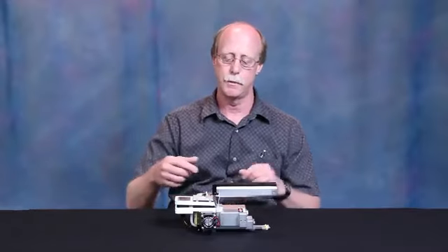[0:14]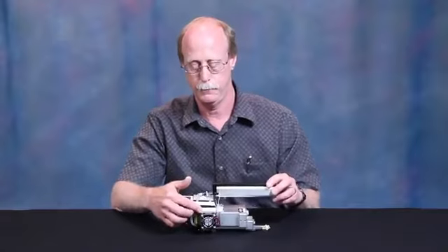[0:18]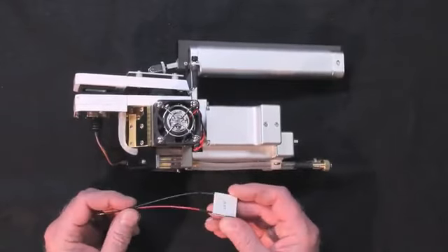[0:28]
Hello, I'm Michael Smith, LI-6400 technician here at LI-COR, and I'm going to demonstrate changing the Peltier cooler element on the LI-6400 head. If you're watching this video, you need to replace your Peltier cooler on your 6400 head.
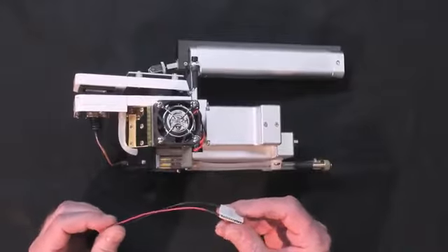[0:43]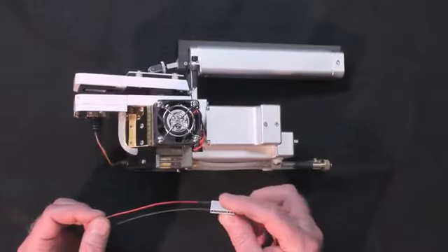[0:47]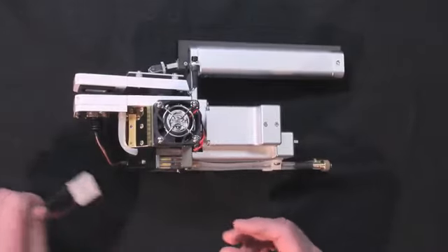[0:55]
The symptoms that you might have might be that your cooler does not work at all, or it might not be able to control the temperature far enough away from ambient for you. So it could be that this cooler is resistive more than it should be, or open circuit. And we'll go through a test to see what is wrong with it before we change it.
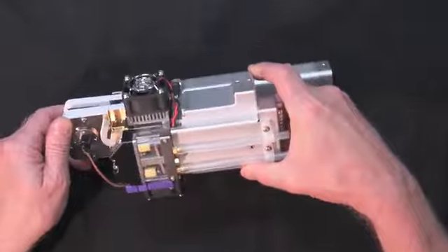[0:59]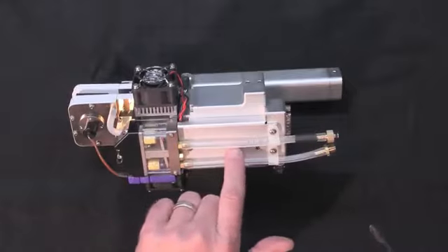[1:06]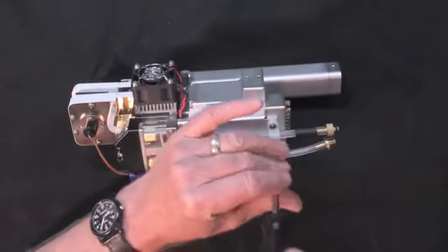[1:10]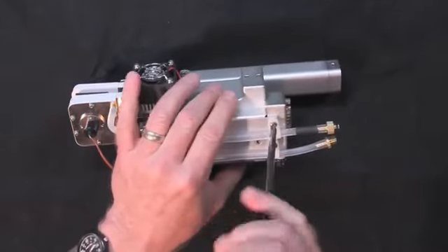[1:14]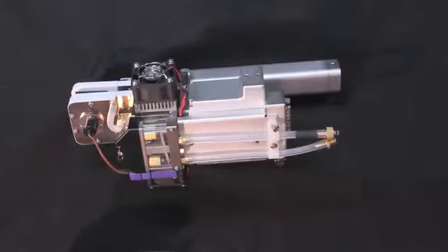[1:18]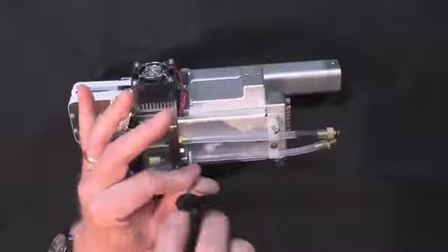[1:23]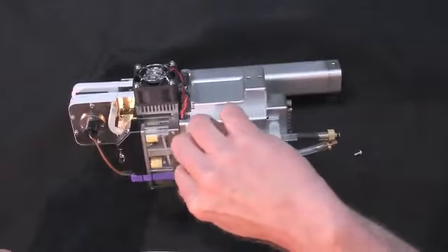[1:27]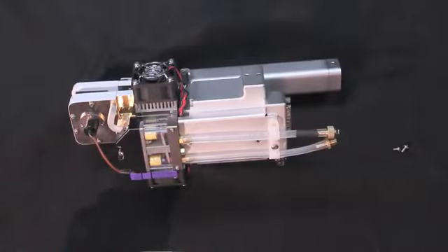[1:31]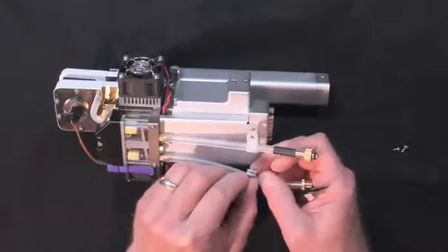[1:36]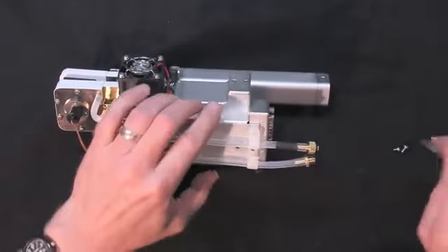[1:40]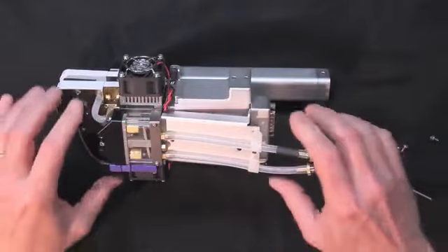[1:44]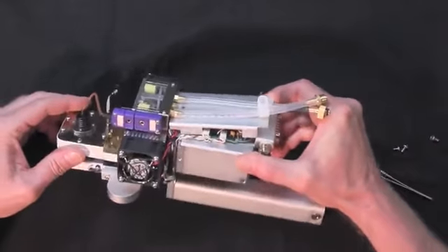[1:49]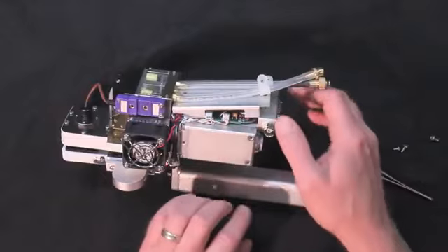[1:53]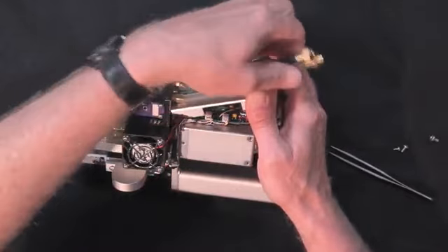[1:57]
First thing you need to do is remove the bottom cover that has the serial number, normally, right here on it, to get to the connections for the cooler. It's pretty common for this to be tight, and you'll sometimes need to pry it off, this cover. I generally get under it with something. And you want to pull the cover up past this connector for the log button so that you don't bend that. The hose is out of the way and it should come off easily.
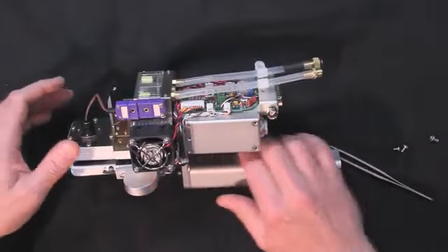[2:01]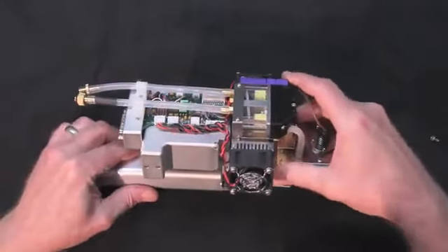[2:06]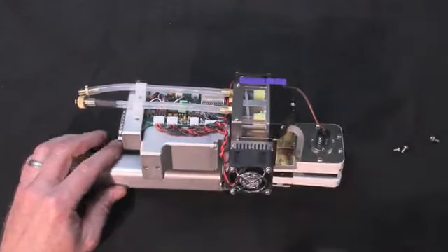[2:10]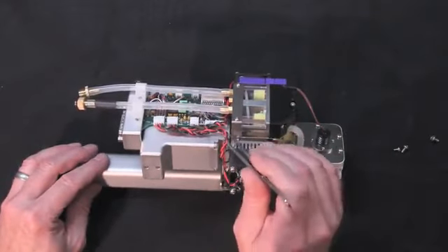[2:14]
Now the cooler wires go to these two white connectors, and you can just follow the wires, like from the left side, from this one, you can see it's this connector. The first two pins are this fan, the next two pins are the cooler.
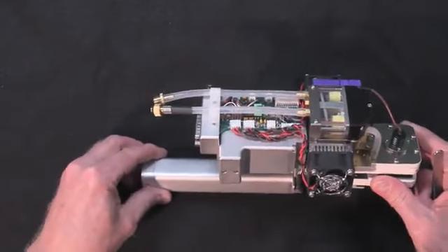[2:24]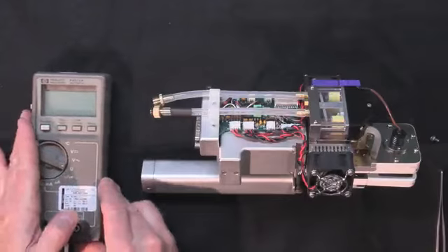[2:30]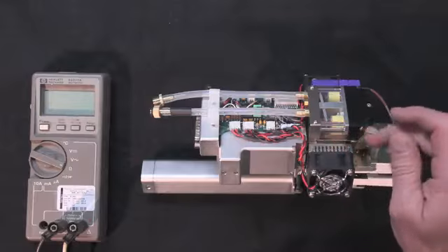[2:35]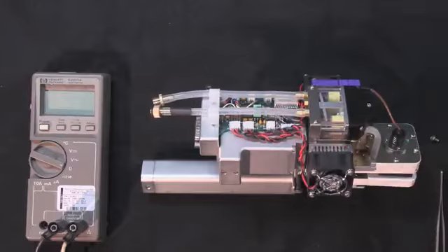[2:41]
Now if you have this 6400 head sitting turned off for about an hour, the temperature on both sides of this heat sink, one side is the block of the cell block and the other side is the heat sink on this cooler. You want to have that at both sides the same temperature, so leave it turned off for an hour.
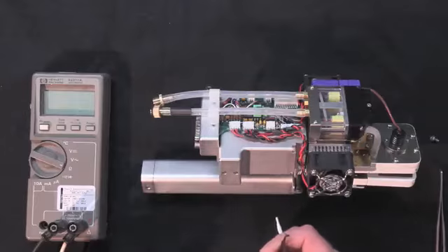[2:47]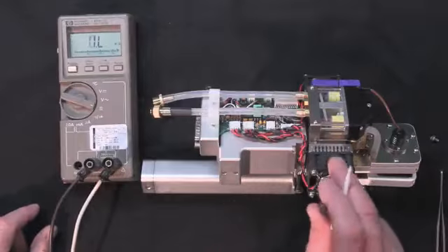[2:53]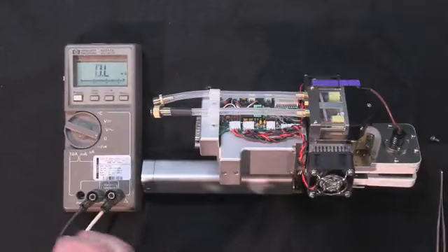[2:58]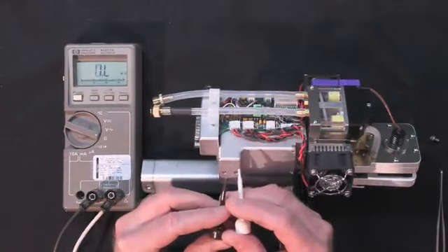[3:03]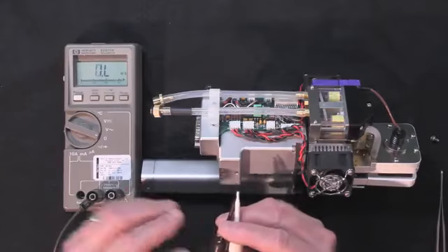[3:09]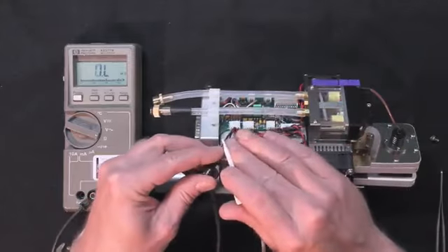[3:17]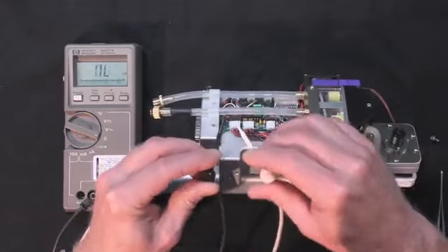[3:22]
Now we're just going to measure the resistance of one of the cooler elements here, and I'm hoping that that display is visible on the video for you. But when you go to make this resistance measurement, you want to touch your leads on there and take the reading immediately, because the current from the ohm meter is going to cause one side to get cooler or warmer than the other. .7 ohms. Okay, that's a normal cooler.
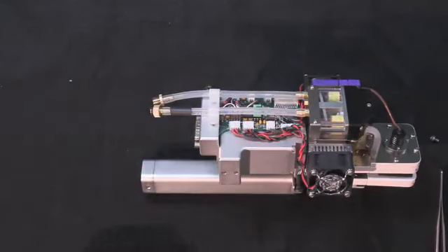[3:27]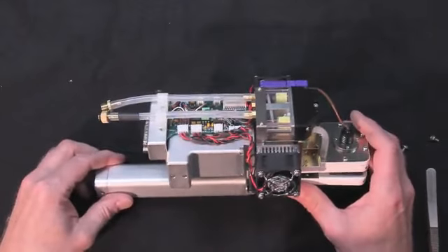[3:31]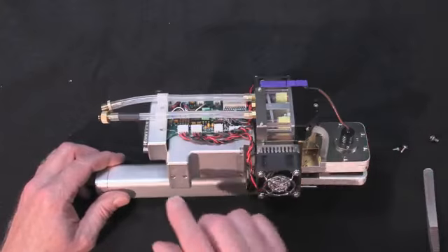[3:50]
We're going to change this cooler even though it's not bad. If it were open circuit, the cooler will not work at all. If it's somewhere around 5 to 6 ohms, you might see half of the efficiency out of the cooler that you need. Over 10 or 12 ohms, and the cooler is not going to work very well at all.
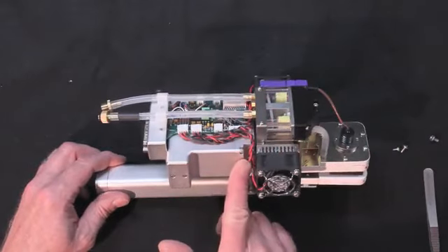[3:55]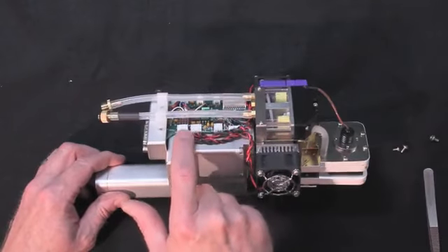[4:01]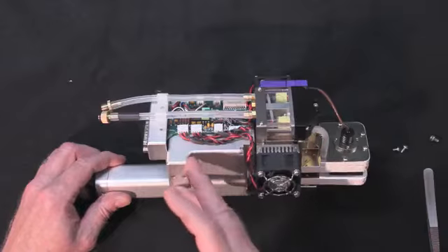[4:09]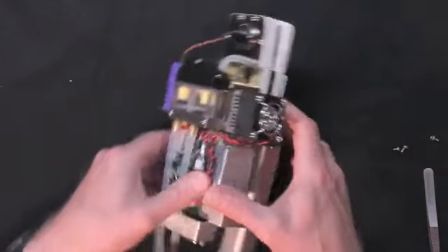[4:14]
We're going to change the cooler and splice the wires right here, because the wires from the cooler are not long enough to make it to this connector, and there are also crimped on pins on the wire ends that you're not able to replace. So we're going to make a splice right here.
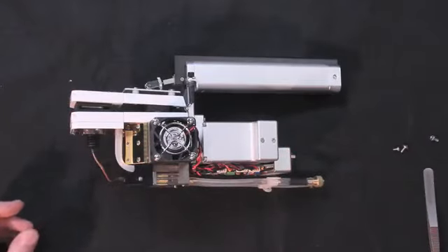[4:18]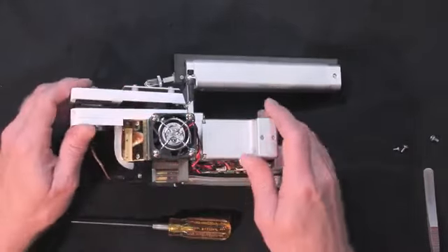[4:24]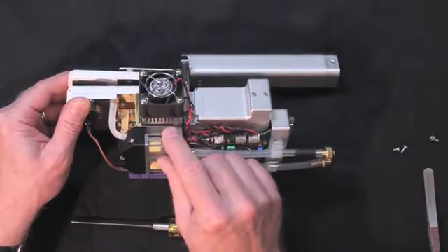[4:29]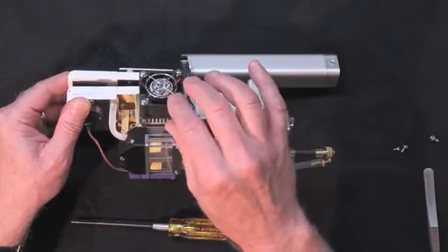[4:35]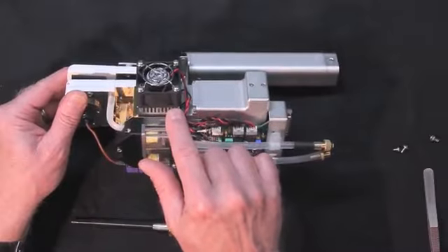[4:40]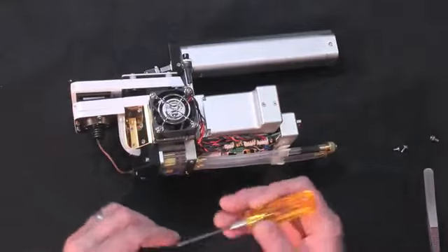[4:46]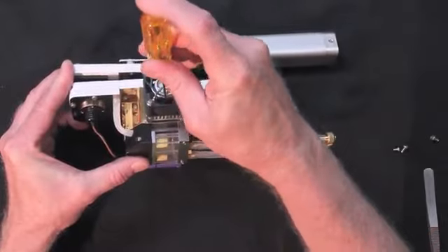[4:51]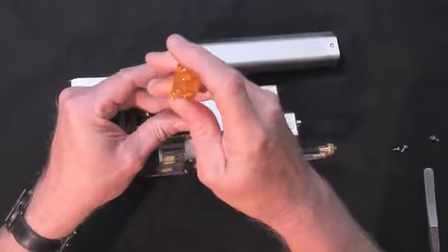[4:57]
The fan is attached to the heat sink. This is the heat sink with the fins. And then the heat sink is then attached with 2 screws to the block of the cell. It's a lot easier to leave the fan attached to the heat sink than it is to remove these screws, and on older units you will have washers between the fan and the heat sink. It's a lot harder to put back together. So I'm going to sneak my Allen wrench through the fan and loosen these 2 screws on the heat sink and leave them in place.
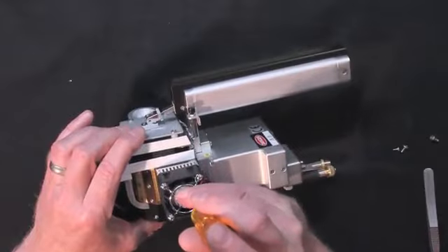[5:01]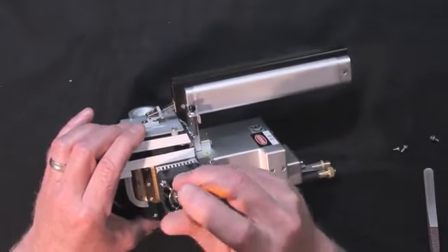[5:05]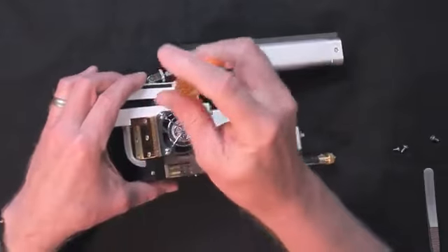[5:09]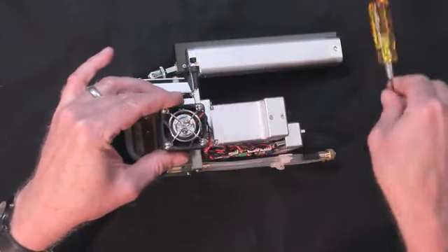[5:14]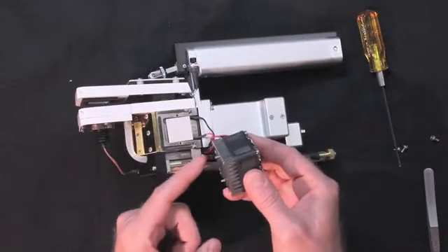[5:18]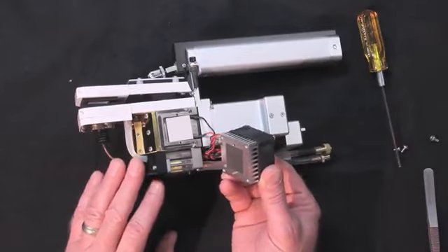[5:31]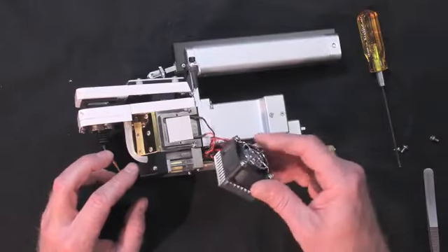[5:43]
Okay, as long as I leave these two screws here facing down, they're not going to fall out, and this will make it much easier for you. There's a thermal conductive pad on the heatsink, this black part. In your kit for the Peltier cooler, you will get 2 of these pads with each cooler. You don't need to replace them unless they're damaged.
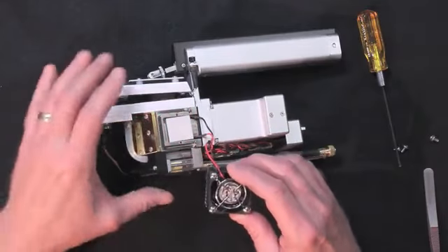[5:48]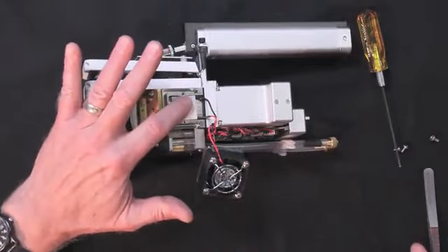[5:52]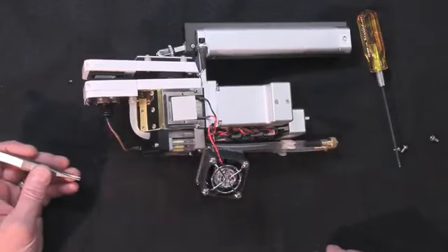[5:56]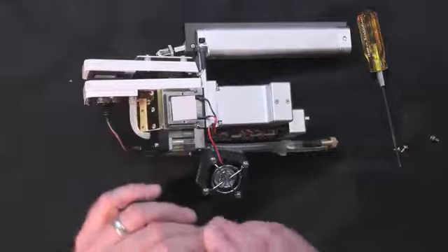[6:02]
Now the cooler has a pad on the other side here, and to get the cooler out you need to pry it a little bit. They stick to the rubber. Sometimes you break the cooler taking it out.
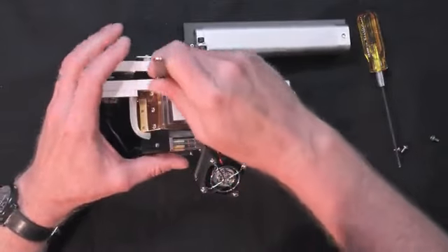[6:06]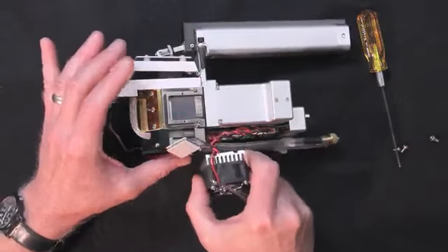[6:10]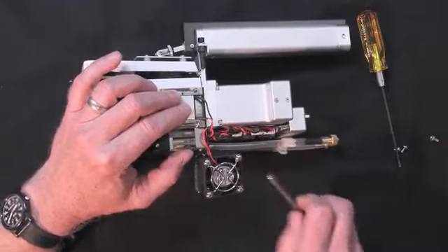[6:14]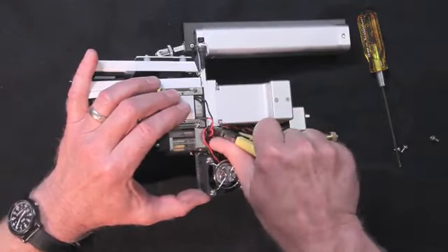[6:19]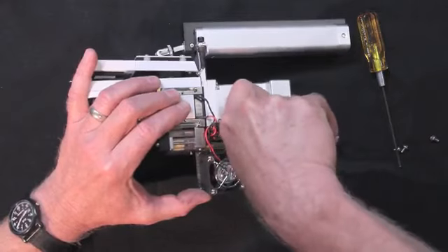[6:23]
There, this one came loose without damaging it. Okay, the old cooler, I'm going to cut the wires a little ways away from the cooler after they make this 90-degree turn.
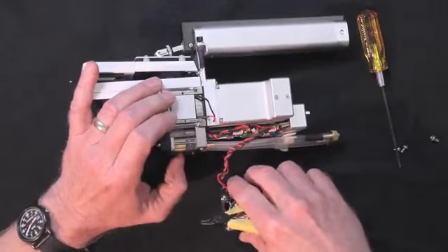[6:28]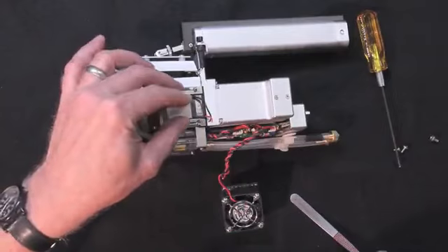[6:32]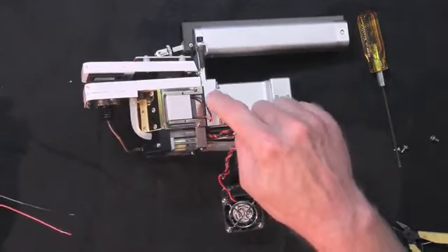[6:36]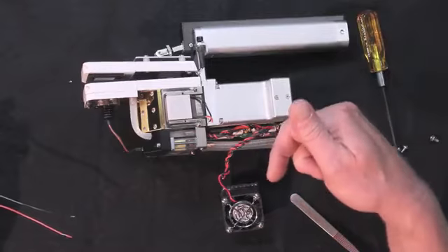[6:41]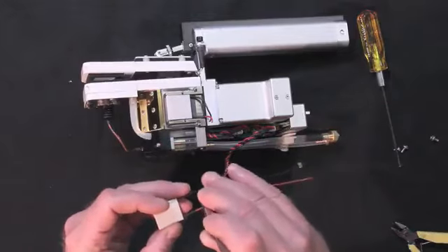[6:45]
And you'll notice on the head, on the left side of the head, the black wire is up towards the handle. On the other side of the head, the black wire is down. So you need to pay attention to the orientation of it, or the coolers will fight each other.
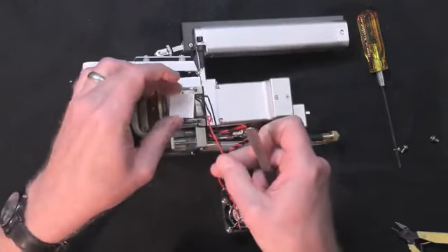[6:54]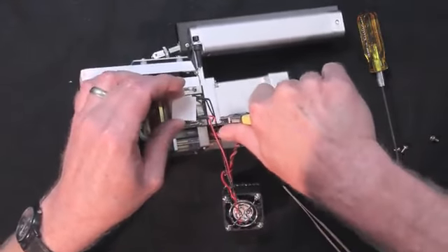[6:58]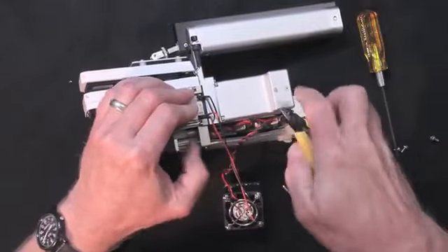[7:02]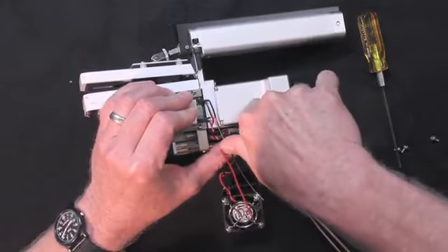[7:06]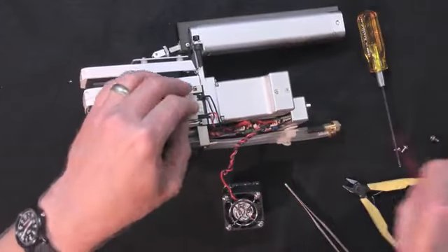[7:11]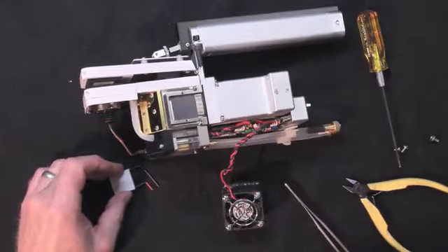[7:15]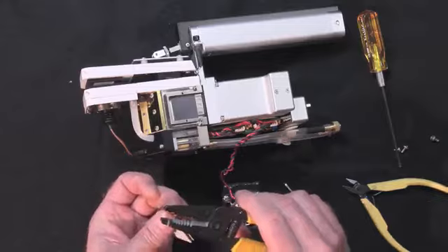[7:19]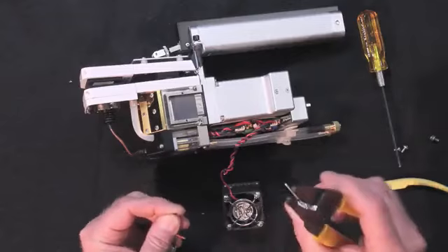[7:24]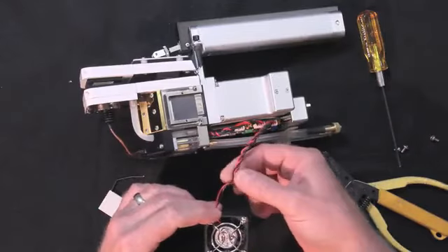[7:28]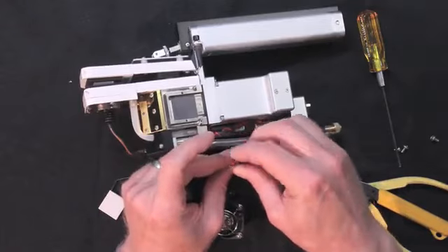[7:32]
I'm going to bend this cooler in roughly the shape of the old cooler and cut its wires off with a little bit of extra length than what we had. We'll strip the wires 1/16 of an inch. You'll need to unwrap these wires a little. We'll strip these 2 wires.
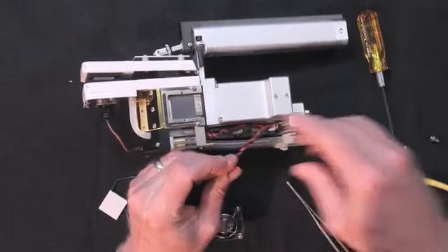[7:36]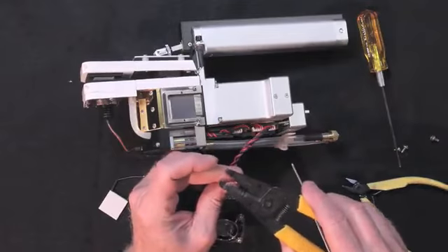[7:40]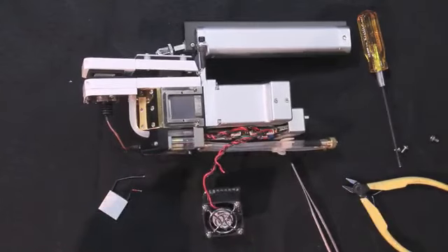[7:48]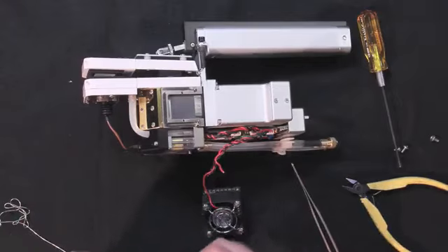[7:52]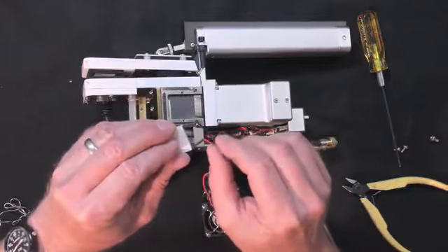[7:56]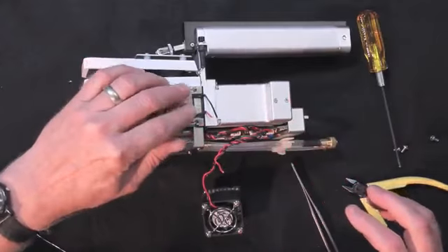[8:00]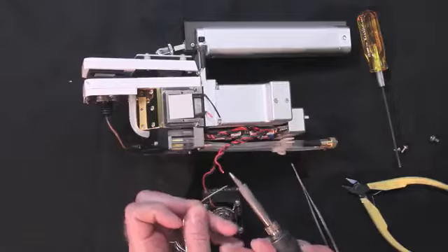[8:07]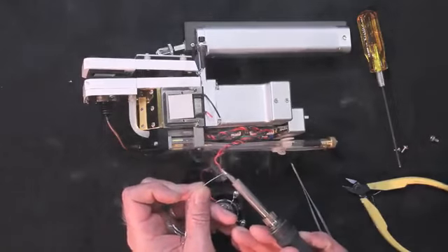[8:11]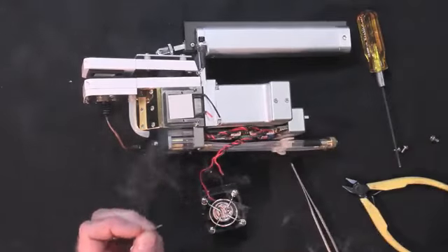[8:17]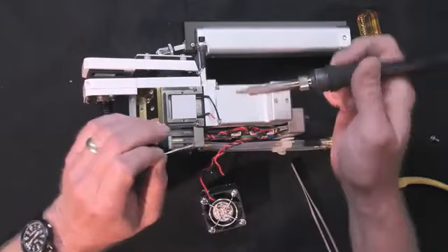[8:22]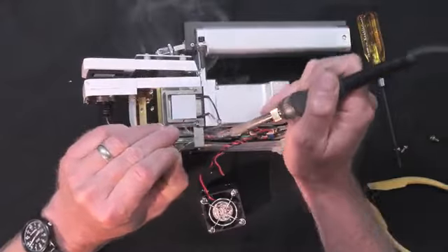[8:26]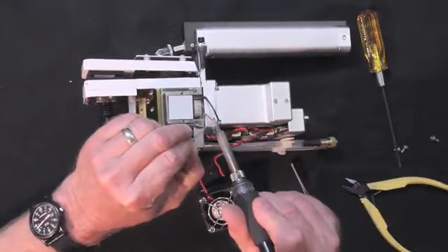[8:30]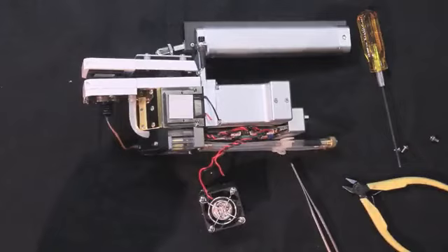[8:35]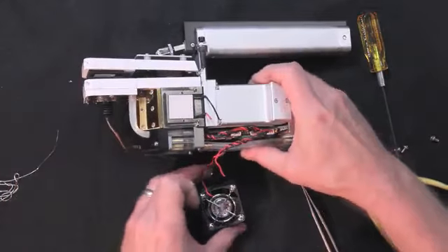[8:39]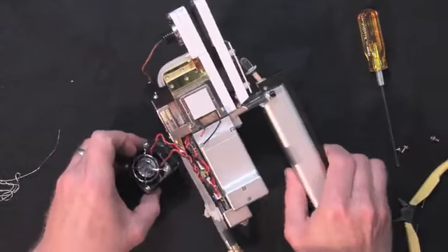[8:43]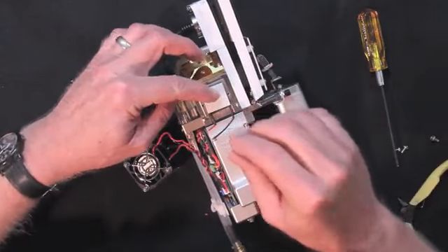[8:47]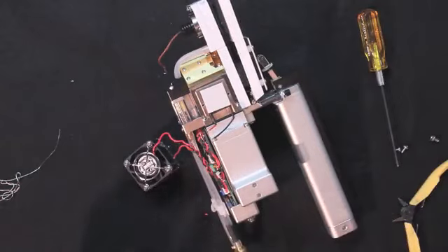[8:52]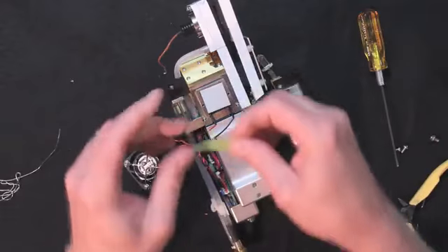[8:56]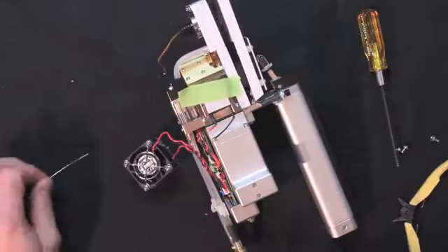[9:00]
Now we'll need to tin all 4 ends. Oops. Sorry. It's often a good idea to get everything in the most comfortable position for you to work in. Sometimes the coolers don't like to stay in place once you've gotten one wire soldered, so you can just put a piece of tape across there and hold it still.
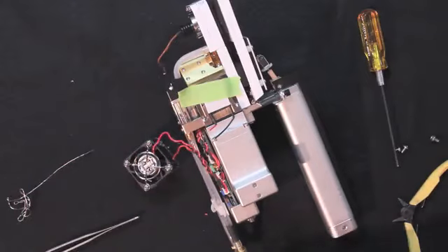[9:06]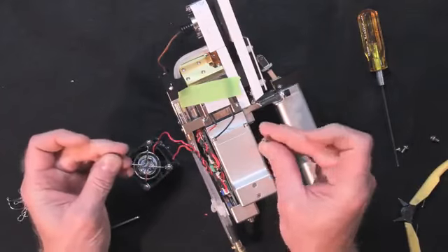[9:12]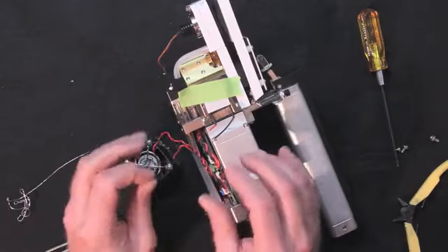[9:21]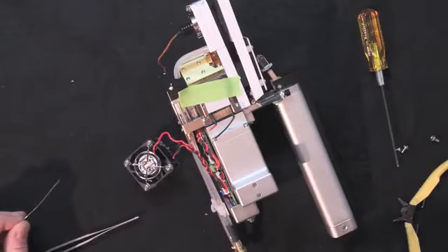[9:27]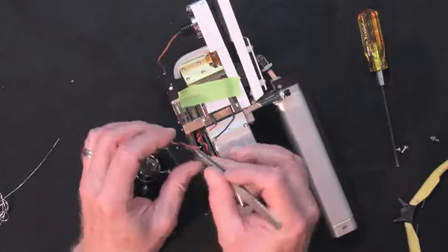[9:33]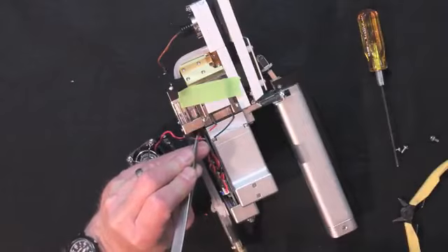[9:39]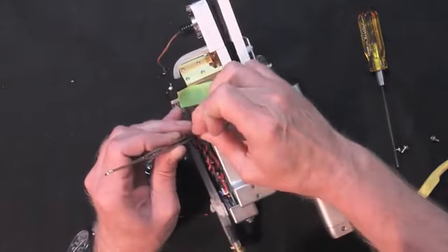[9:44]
Also, in the kit of parts that you'll receive, you'll get some pieces of heat shrink. This is 1/16 inch heat shrink, cut 1/4 of an inch long. Slip that down over the wires. You want to be able to have these wires in a comfortable position for you to hold them very still while the solder cools.
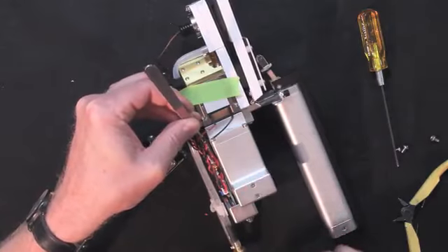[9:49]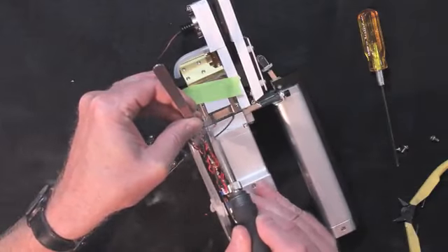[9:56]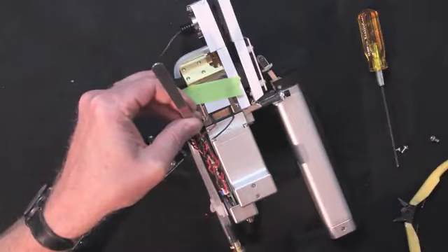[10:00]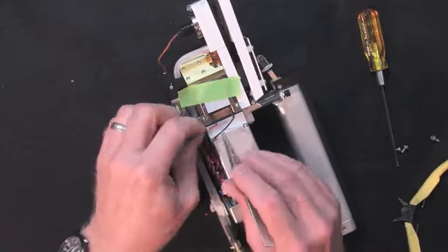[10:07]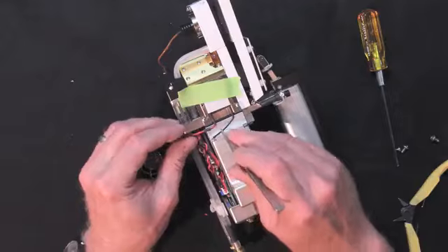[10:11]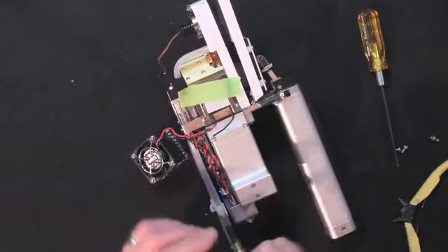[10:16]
So I get them where I want them. And then with a freshly tinned iron with fresh solder on it, and these 2 ends of the wire were already tinned, you can make a very clean lap joint. Slide the shrink just over our joint, and get ready for the next one.
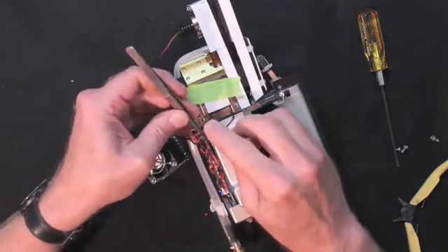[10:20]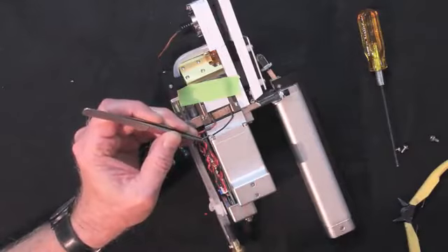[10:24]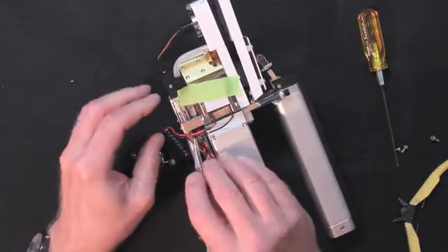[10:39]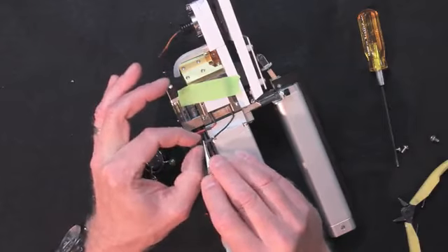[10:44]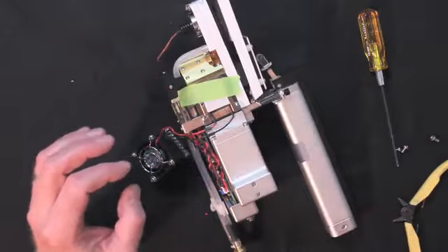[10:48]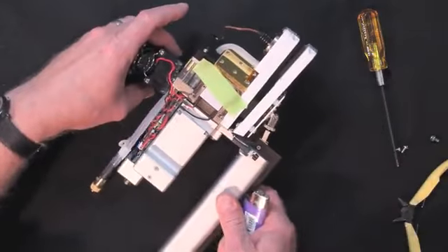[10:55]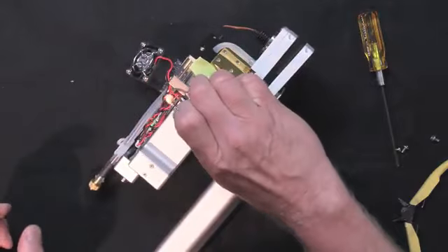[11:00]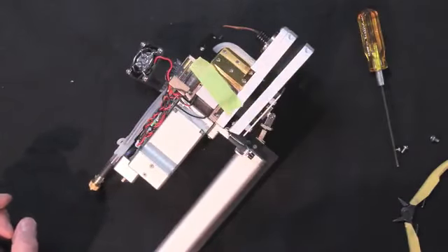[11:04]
As long as there's smoke coming off your soldering iron, you've got a lot of flux on there, and this will turn out to be a very clean joint and very small. Next, you'll want to shrink the shrink. If you don't have a heat gun, you can use fire. As long as you don't stay on it too long.
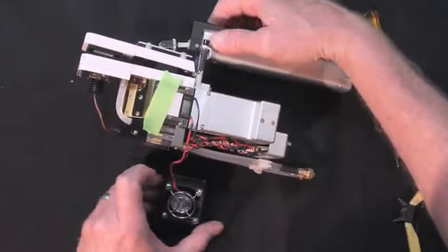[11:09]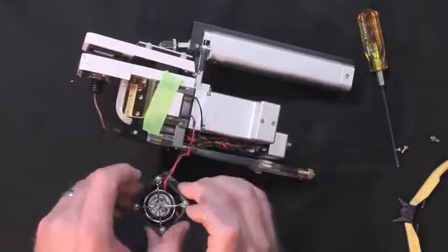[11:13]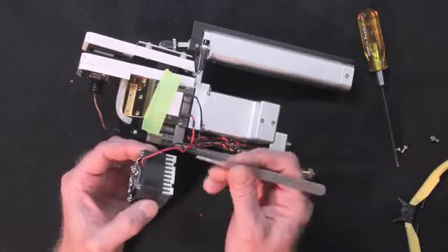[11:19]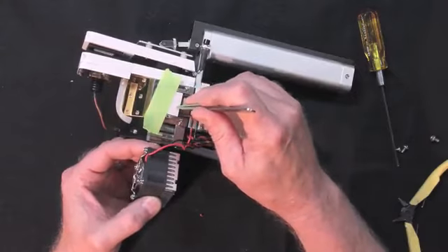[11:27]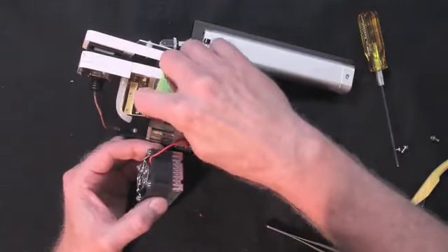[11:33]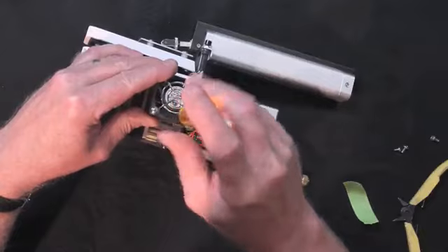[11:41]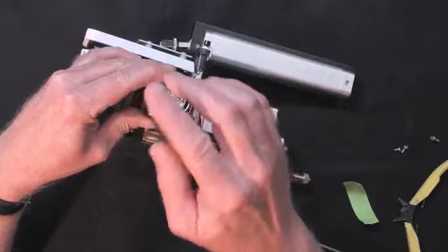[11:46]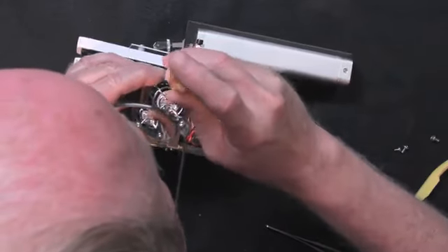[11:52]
Okay, on this heat sink, when we mount it back on here, note that there are two gaps milled into the heat sink here, and that is where these two wires exit the place where the cooler sits. The wires need to be in those gaps or it'll get pinched and shorted to ground. I lay my cooler down, lining up one of those two screws, and start the screw. It's a challenge to get on there. I did it. Okay, start both screws, but don't tighten either one of them.
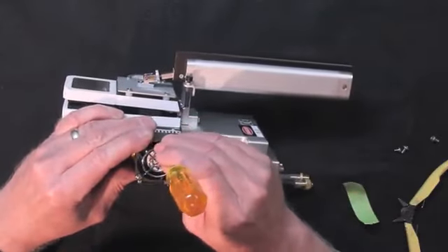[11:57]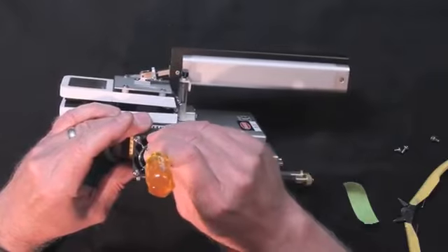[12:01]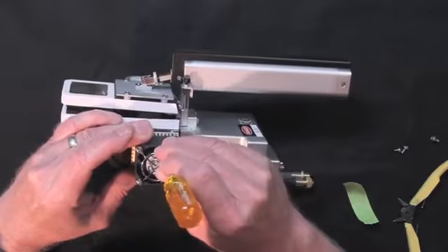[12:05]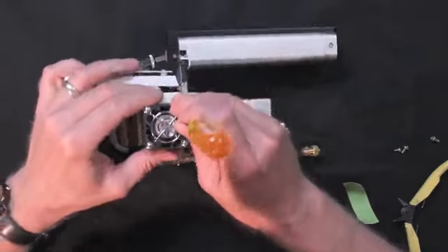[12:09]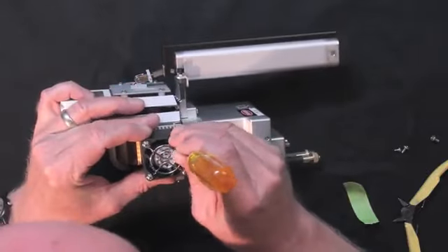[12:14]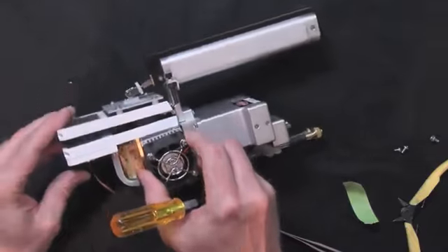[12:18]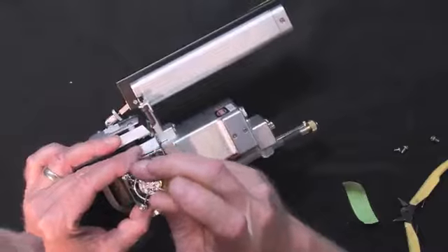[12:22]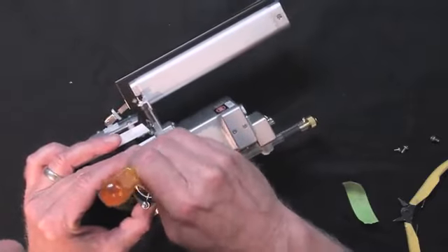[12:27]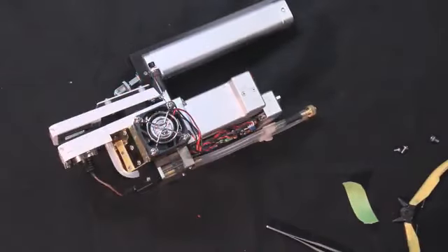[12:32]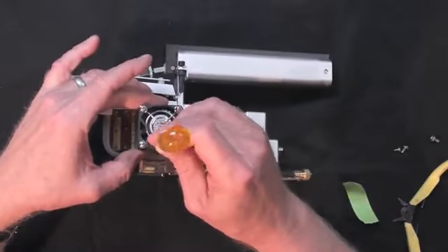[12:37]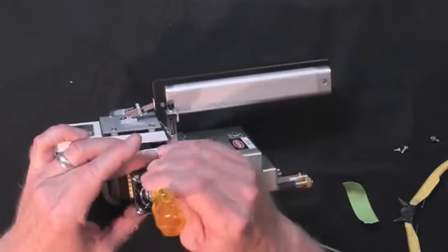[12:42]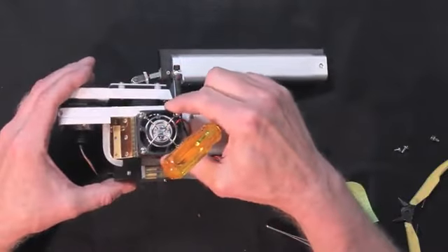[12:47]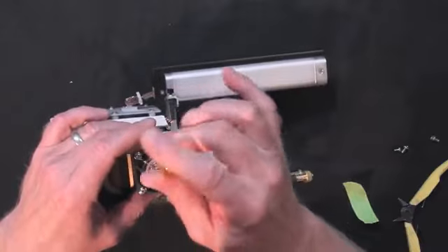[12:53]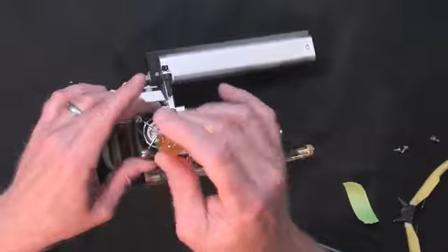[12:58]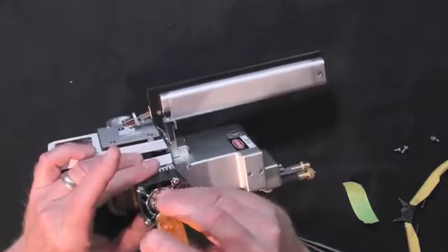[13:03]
It's not easy to see the second screw. Okay. Tighten each screw just till it barely stops, not giving it any torque. At this point, it moves slightly. Now you want to just tighten it just a little bit on each side until you feel the screw stop. Don't go beyond that point.
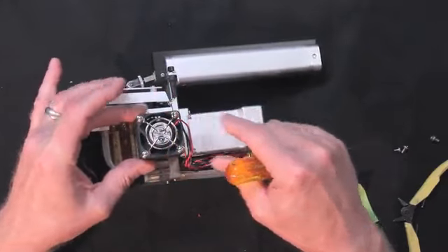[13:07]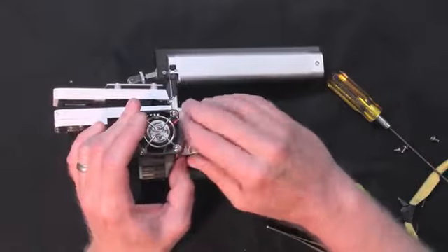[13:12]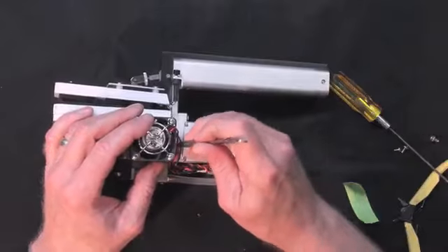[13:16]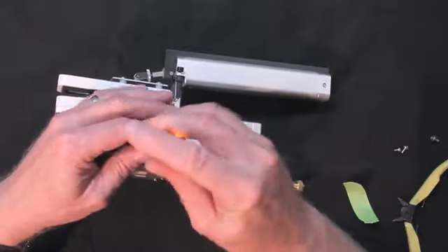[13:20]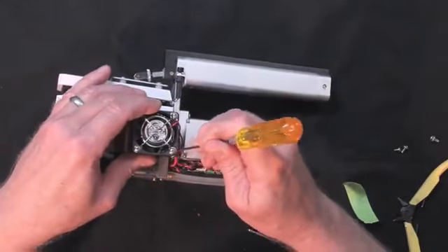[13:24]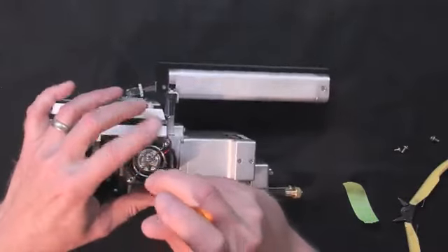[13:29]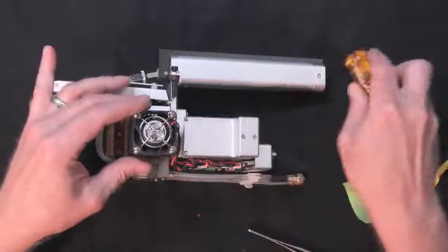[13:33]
The cooler is very brittle. It's got two ceramic sides. Check that the two wires are coming out of the two slots on here. There.
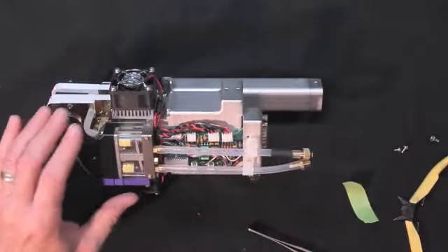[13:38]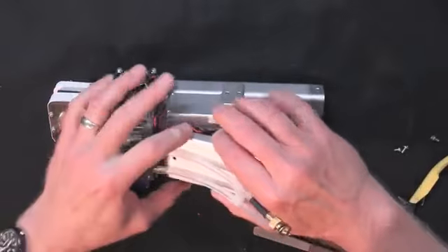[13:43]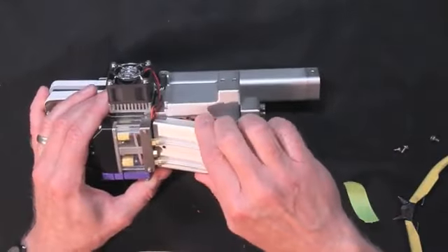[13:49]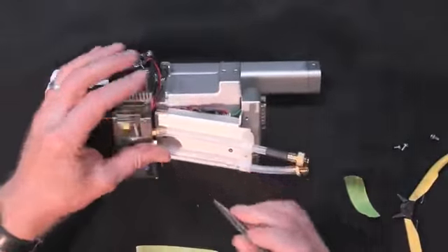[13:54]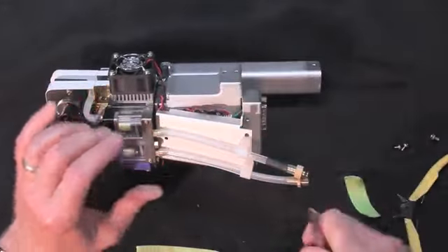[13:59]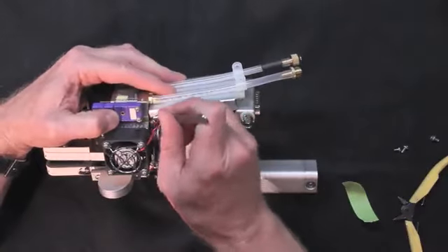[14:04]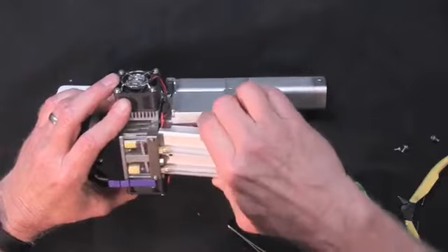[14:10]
The rest is reassembly, and the important part in reassembling this cover under the bottom is to make sure you don't pinch any of these wires between the cover and the block of the head. So you need to pull them into these gaps on each side. Make sure they're not pinched there. And then this bundle has to fit along this edge.
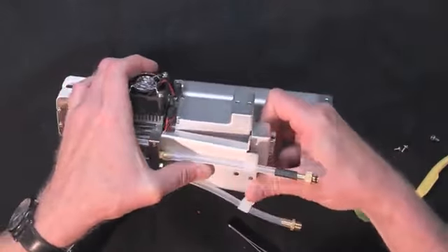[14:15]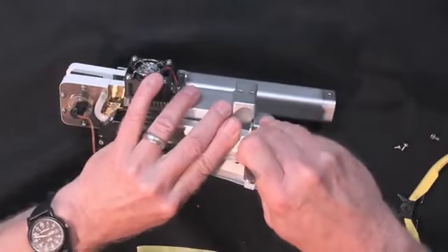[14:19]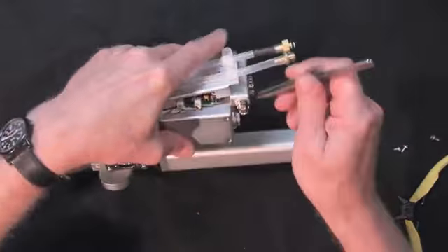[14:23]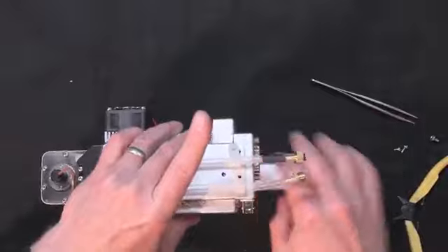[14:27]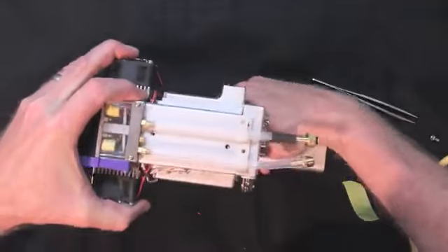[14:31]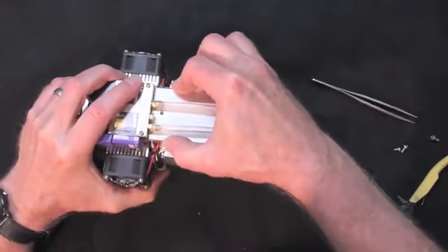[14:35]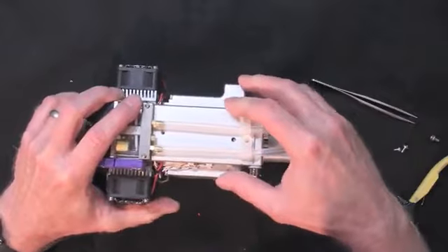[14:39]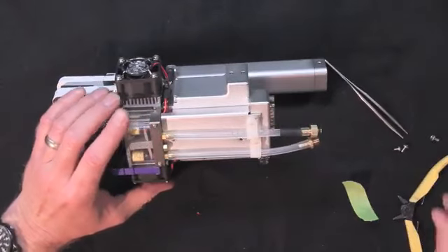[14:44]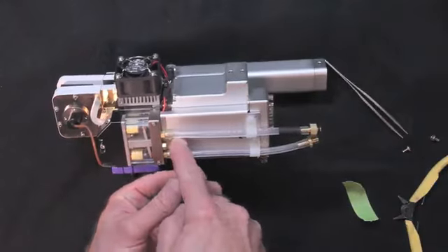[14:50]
Now, to make sure that the wires are in fact not pinched in there, slide this cover back and forth, and you can feel metal rubbing against metal, and you know there are no wires pinched in there. Now you just put the covers in the screw and you are done.
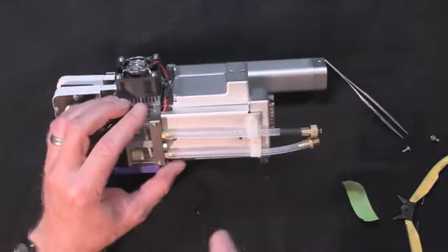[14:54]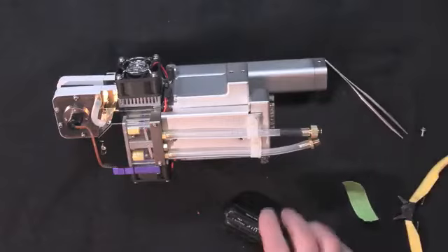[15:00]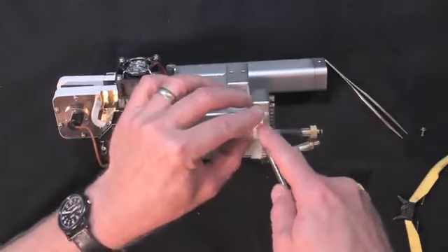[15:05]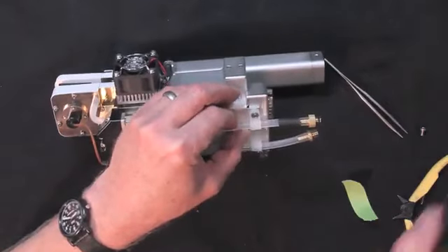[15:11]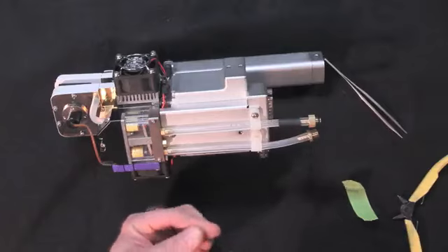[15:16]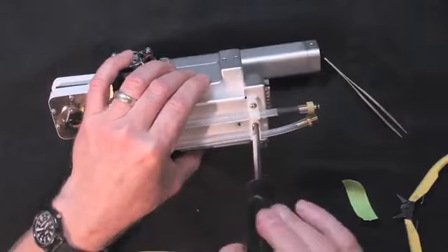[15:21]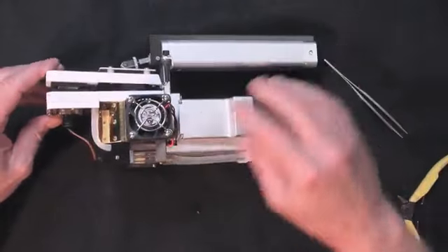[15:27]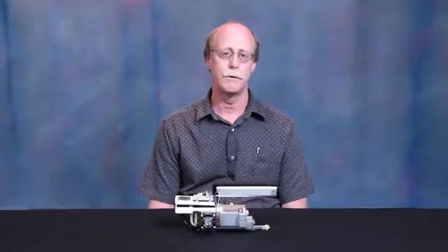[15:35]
So that's how you change the coolers on the head. If you have any other questions, you can contact tech support at LI-COR.